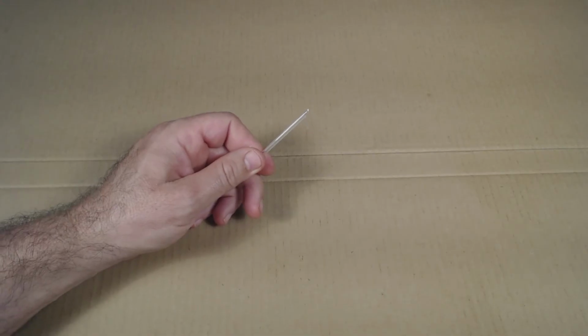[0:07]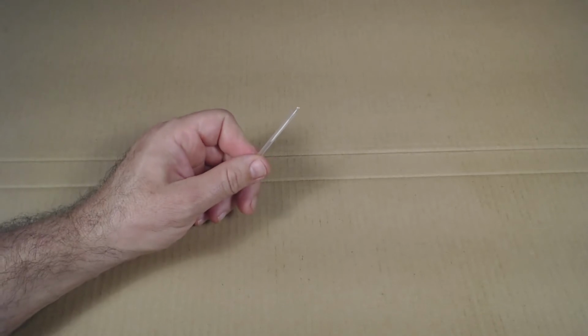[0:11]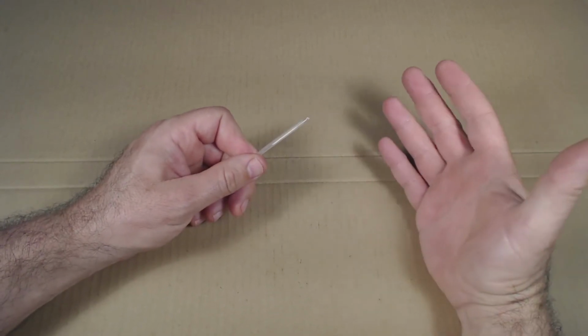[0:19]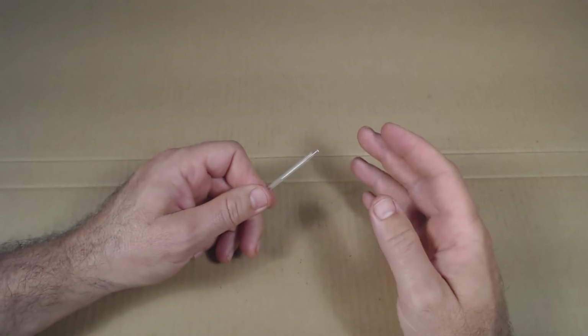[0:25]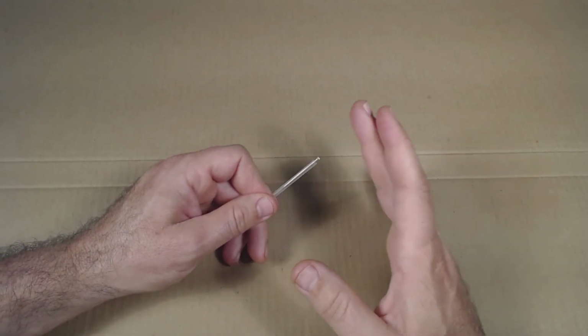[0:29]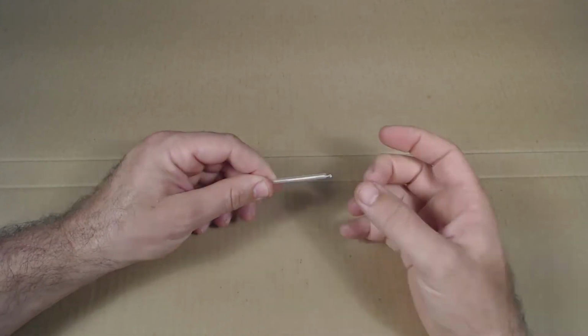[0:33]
So I thought I'd show you one of my crazy inventions I did when I was in school to help me practice needle insertion. There are three main techniques that I see practitioners use to insert the needle. One, they'll just kind of tap it in like this. I prefer to flick it in this way or this way.
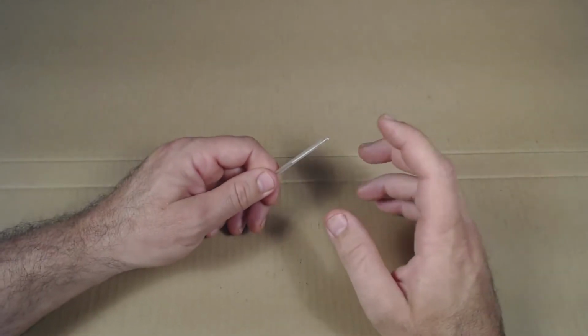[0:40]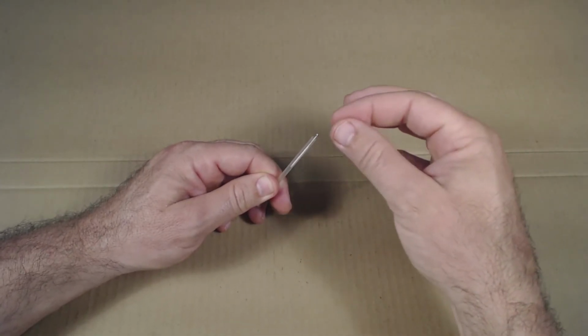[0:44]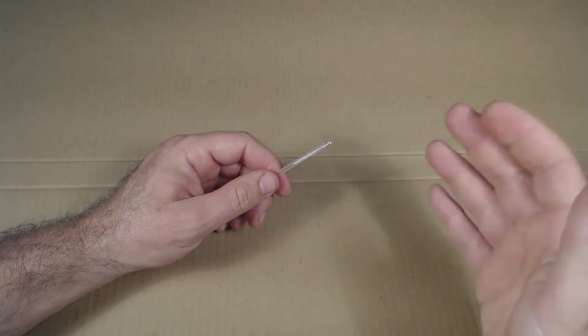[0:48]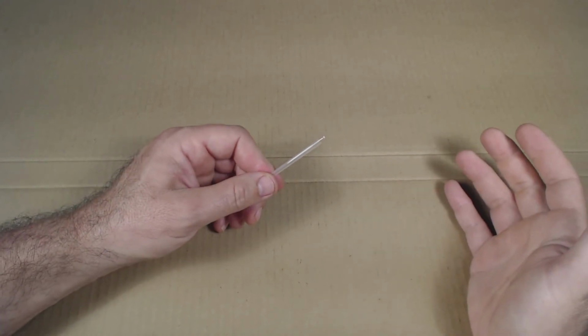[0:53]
So how can you practice that motion? You could practice it on the practice pad, but every time you flicked it in, you'd have to pull it out and put it back in the tube and do it again. So when I was in school, I wanted to find a way that I could just get a lot of repetitions in and not have to carry my practice pad around.
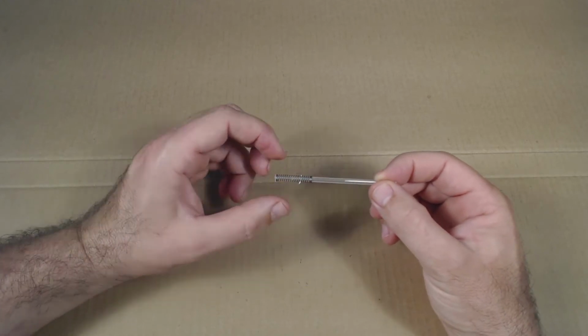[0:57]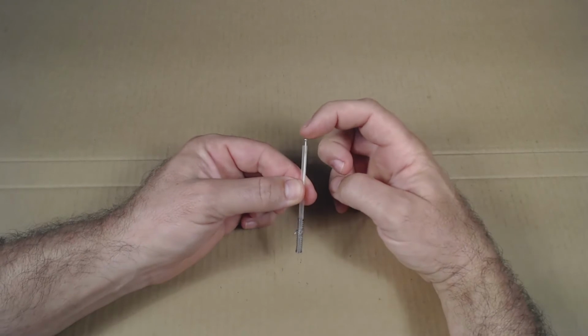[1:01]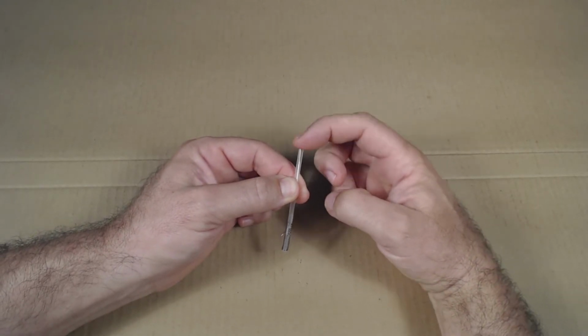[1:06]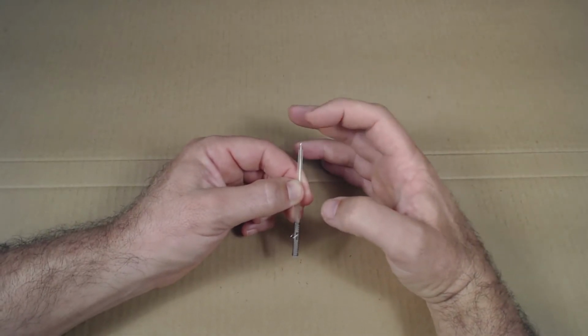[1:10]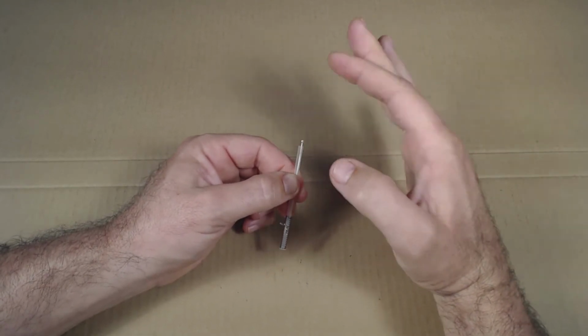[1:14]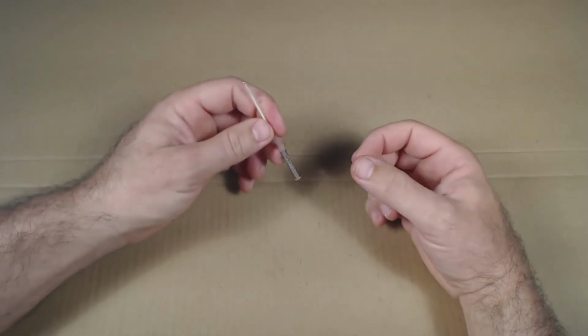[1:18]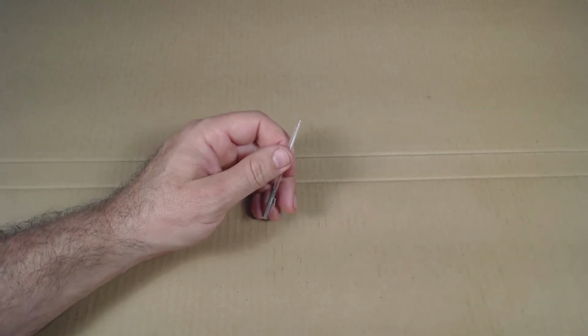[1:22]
So I made a little gizmo like this. It makes the needle spring-loaded, so it'll pop up every time after you hit it. It's pretty simple to make, and I'm going to show you how to make this tool in this video. And then you can practice to your heart's content. It's easy to carry around in your pocket, and you can practice multiple times during the day.
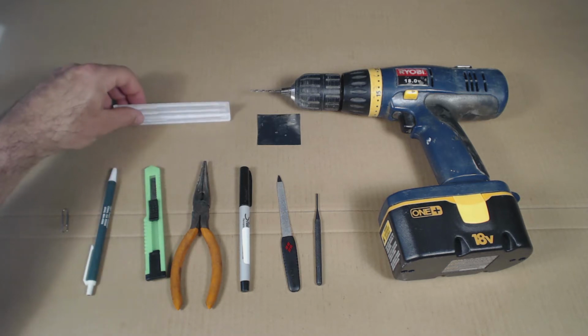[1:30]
So these are the items you'll need to make this project. First thing you need is some needles. The one that I'm making today is going to be out of a 2-inch needle. A 1.5-inch needle might work. A 2.5-inch needle might also work. The gauge of the needle is fairly important. I would use a 0.35 millimeter or 0.40 millimeter.
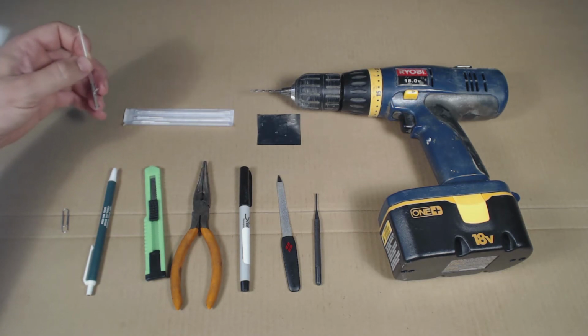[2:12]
That's Chinese 28 gauge or 26 gauge. Maybe you could use a 0.30 millimeter, which would be a Chinese 30 gauge needle. That might also work. It's just a thinner needle. I don't know how well it would stand up to the abuse of hitting it a bunch. But this one is a 0.35 millimeter by 50 millimeter. Next, you'll need a paper clip.
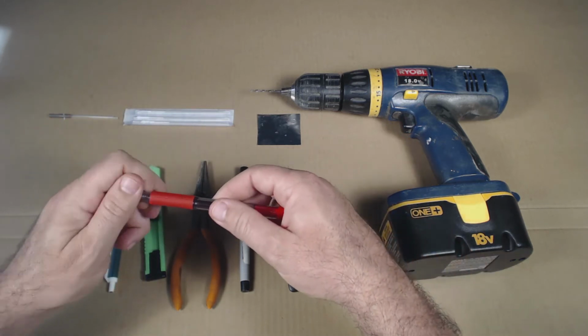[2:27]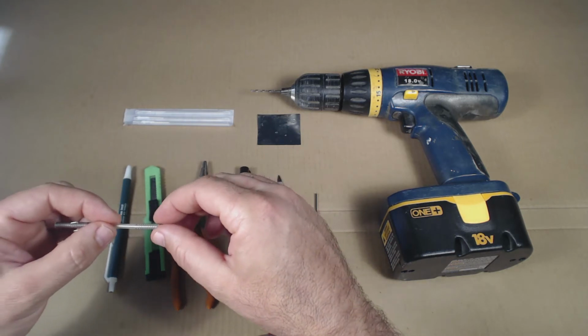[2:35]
You'll need a ballpoint pen, a retractable type of ballpoint pen. Pretty much any type of retractable ballpoint pen should work. You don't need the whole pen. What you need is to scavenge the spring out of it. These springs seem to be pretty universally sized, and they will almost all fit just perfect over a guide tube like that. So you just need to scavenge that spring out.
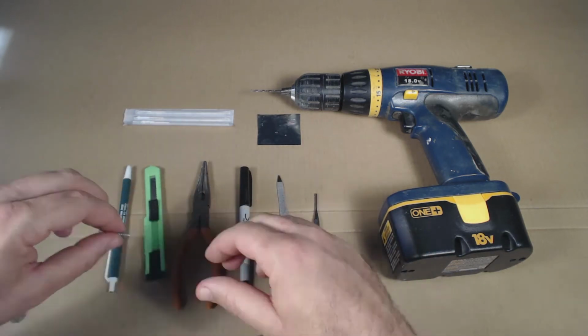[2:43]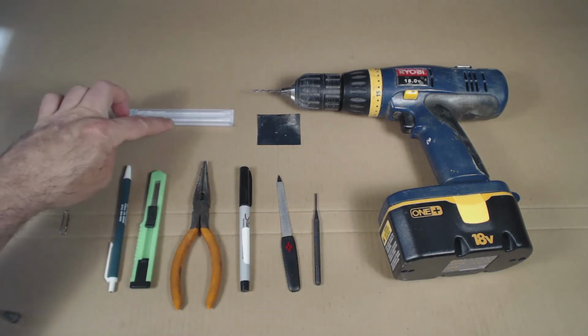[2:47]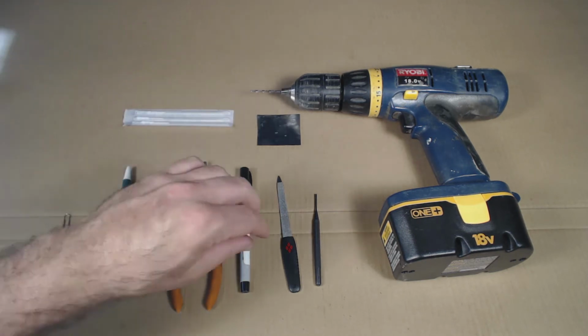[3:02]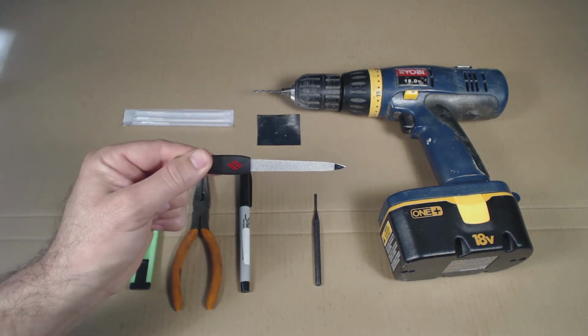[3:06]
Next, you need something to cut the tube with. So you need a utility knife or a razor blade or an X-Acto knife. You need some needle nose pliers. You need a marking pen. This you won't take apart. You'll just be using it to mark where the slots are in the tube. And you need a metal nail file.
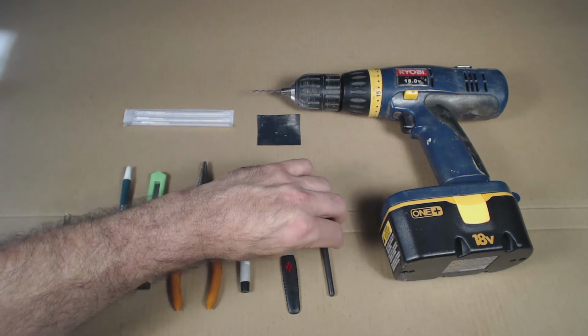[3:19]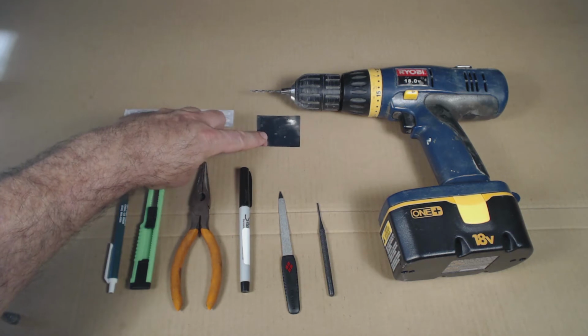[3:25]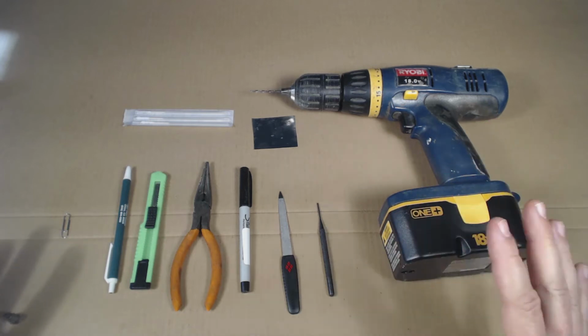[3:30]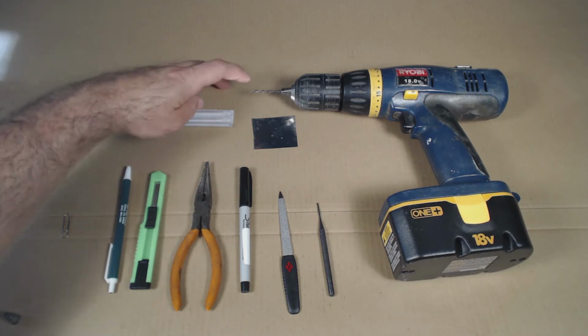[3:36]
And it can help if you have a punch. This is a 1/16th of an inch punch. It makes it a little bit easier to bend the needle. You may be able to bend the needle on the paper clip though, so I'll try to illustrate both methods later in the video. You need a little piece of aluminum foil. You also need a skillet and a stove. And you may need a drill. Many of the ones I've made in the past, I do not need a drill, but you may. If you need a drill, the ones that work on the guide tubes that I'm using is a 3/32 inch drill. So you may need a drill with a 3/32 inch bit.
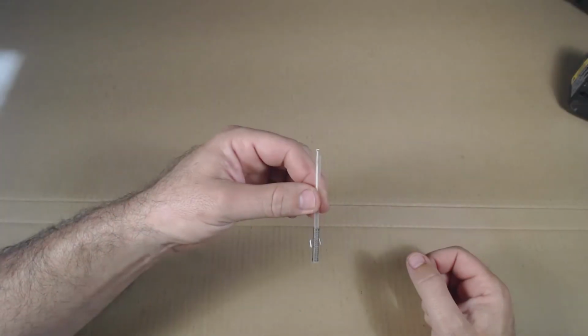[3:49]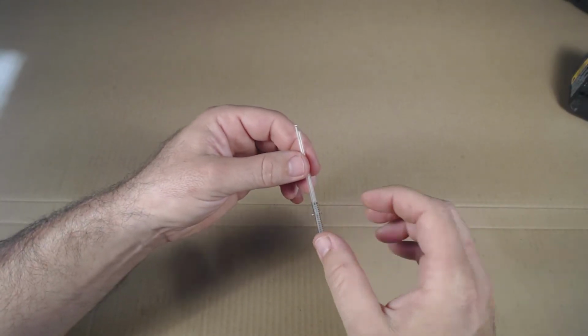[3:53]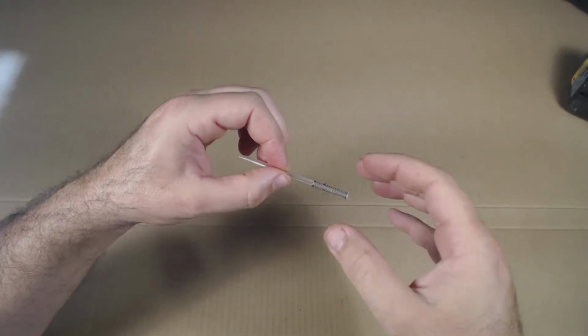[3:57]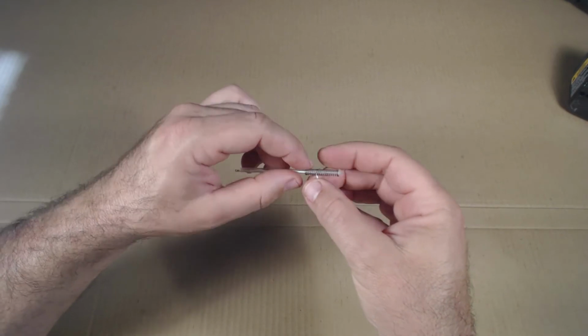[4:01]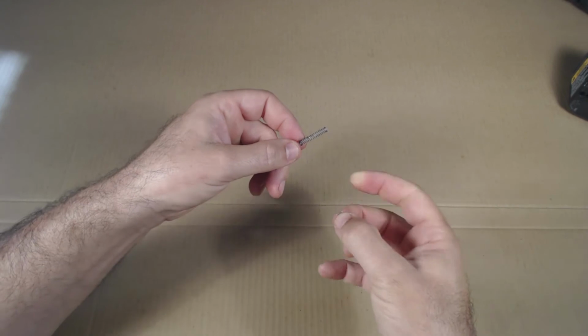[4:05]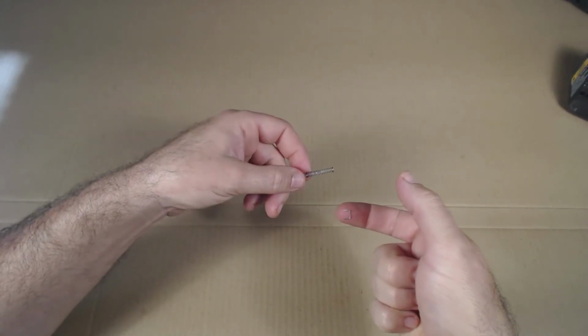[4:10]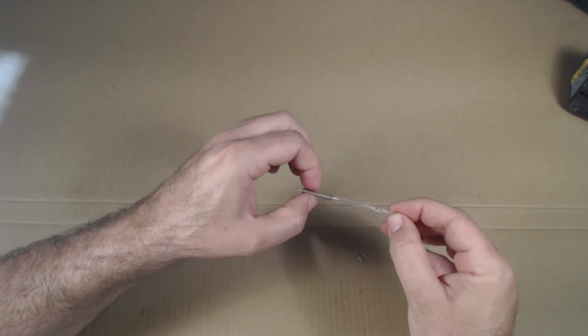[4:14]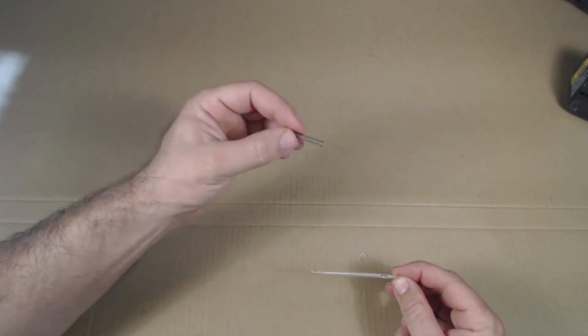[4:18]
Here's an overview of the gizmo, and I want to take a minute to look at each individual part. It might help you understand when we get into the construction steps later. There's a little piece of paper clip here. It's just bent in a U shape. It is to keep everything held together. There's the retractable ballpoint pen spring that will be unmodified.
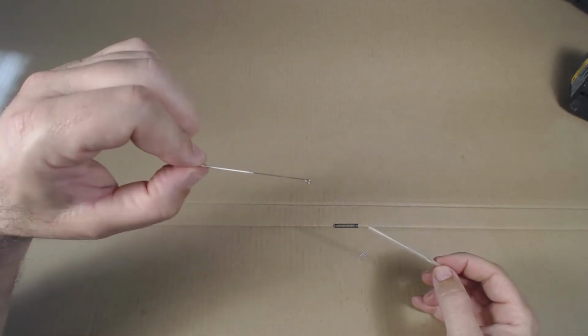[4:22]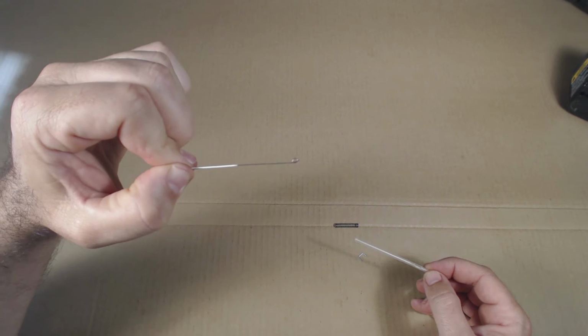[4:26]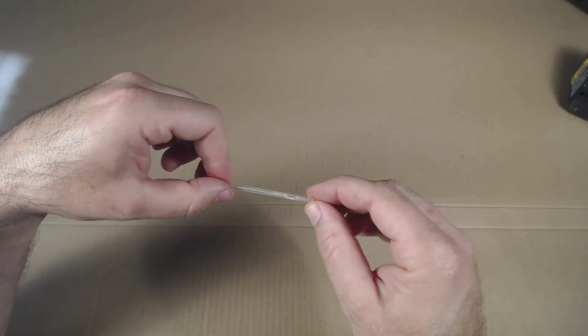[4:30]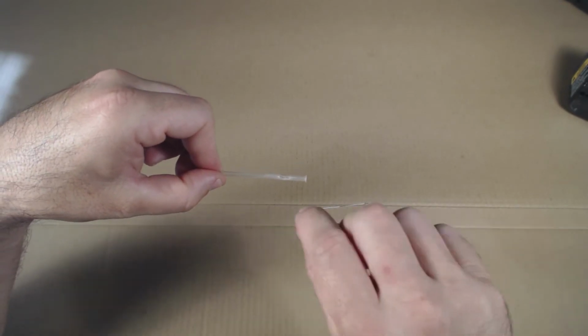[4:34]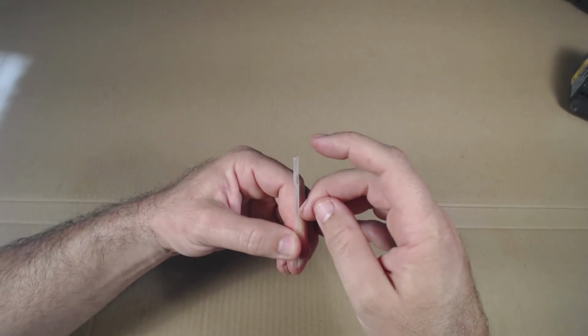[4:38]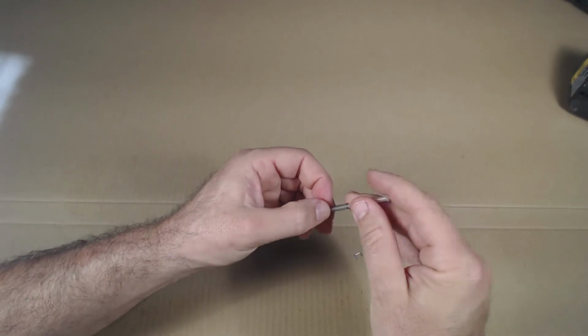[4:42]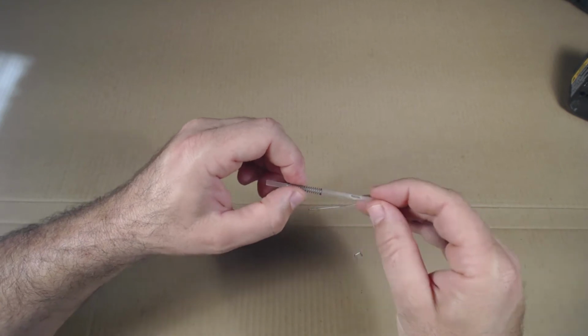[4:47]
The needle, we're going to have to bend a loop in it. I'll detail that in a minute. And the tube needs to be modified. We need to make a slot in it big enough for the piece of paper clip to ride in there. And then we need to melt the end of it just a little bit to retain the spring on there. So we'll detail all these steps next. First, I'll go over the tube.
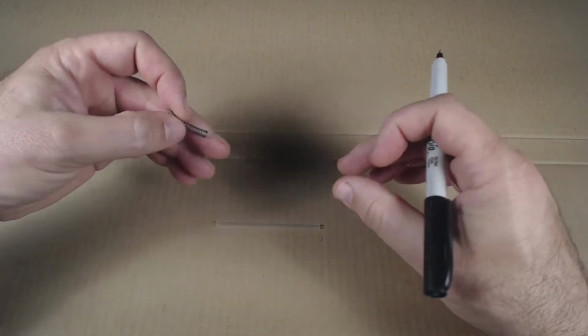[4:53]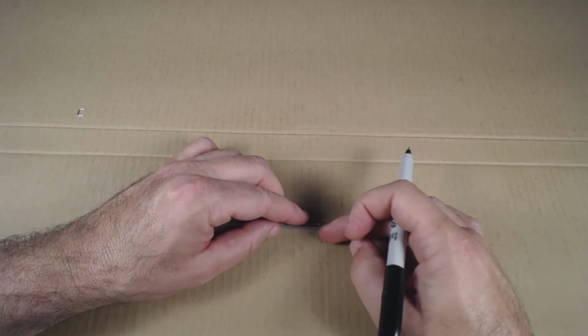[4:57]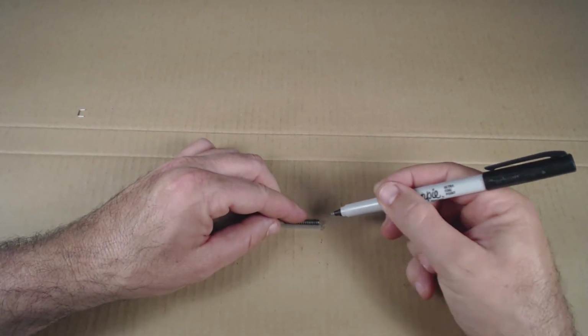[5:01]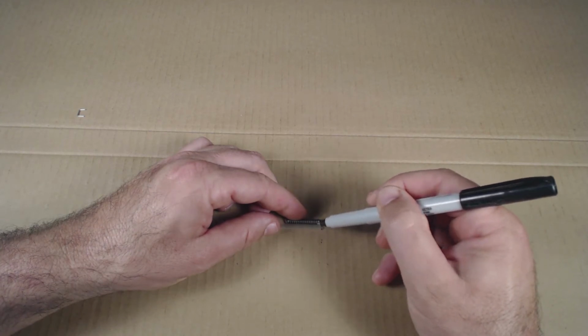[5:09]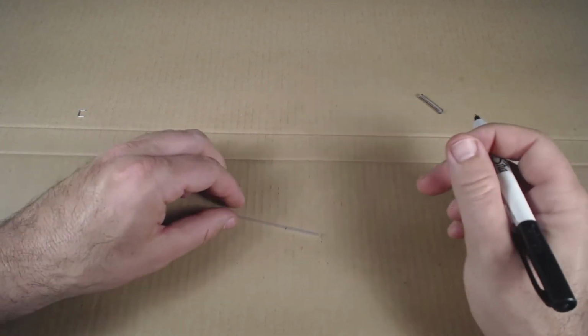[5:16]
So here I have my tube. I'm going to put my spring next to my tube, and I'm going to leave a little gap on this right side because I'm going to melt that. I'm trying to get the spring into its final assembly position, or roughly in that final assembly position. And I'm just going to mark where the top of the spring is going to come on the tube.
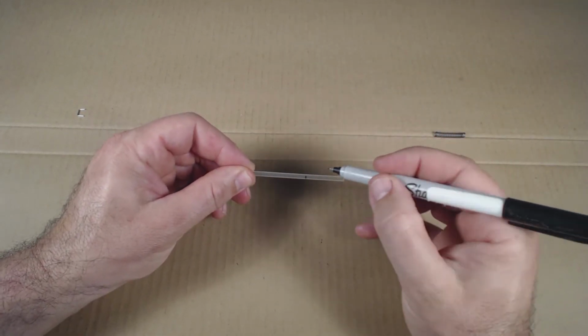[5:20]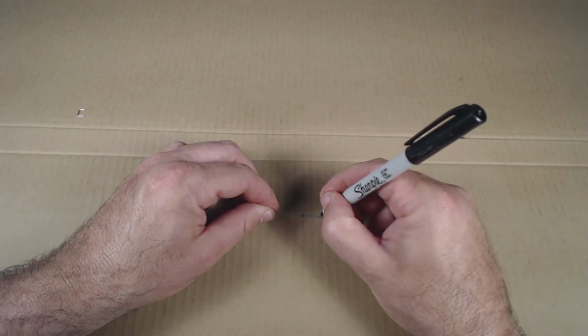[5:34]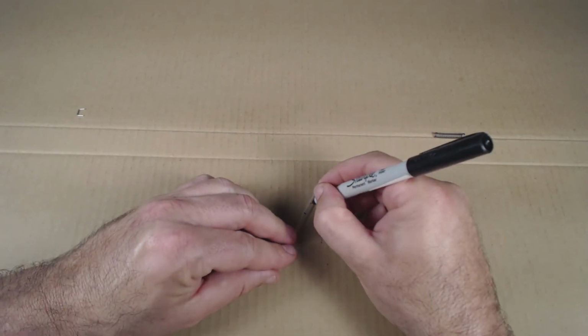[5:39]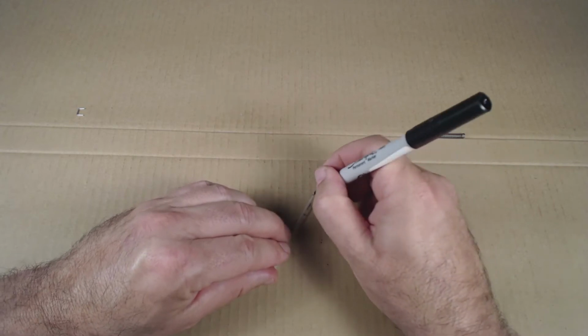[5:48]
So I've marked the tube now, and I need to position the slot. About halfway, I would say, the midline of that distance between the end of the tube and your mark, start about halfway and then just go up from there. I'm just going to make a line so I can cut it with the utility knife, and I'm going to do the mark on the other side as well.
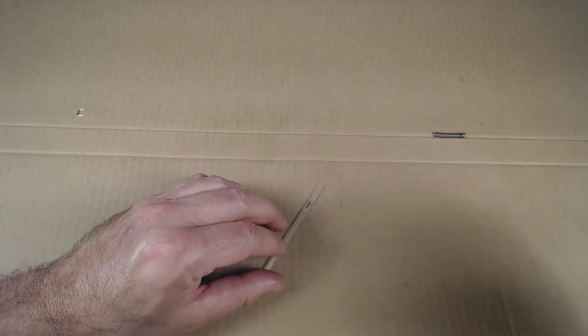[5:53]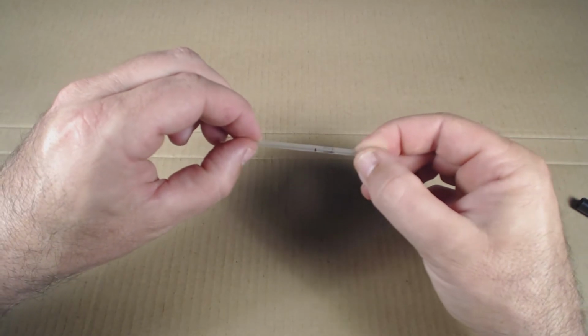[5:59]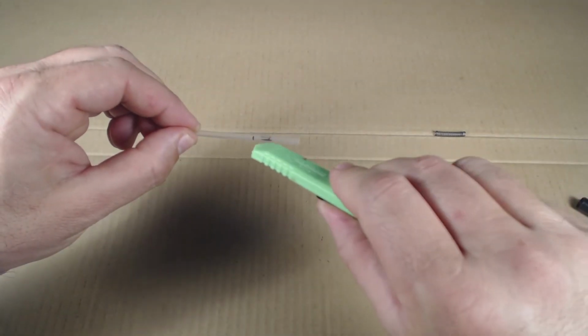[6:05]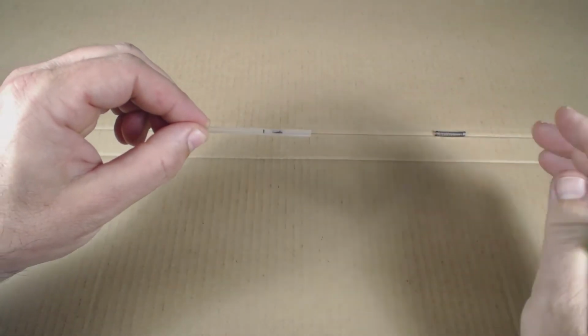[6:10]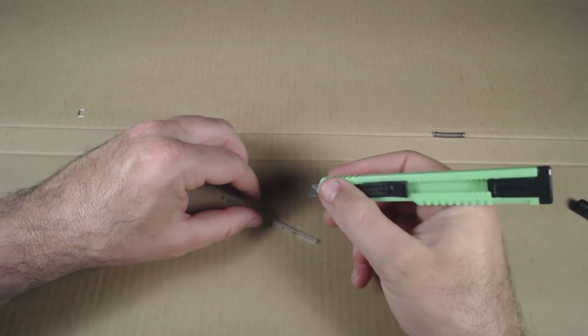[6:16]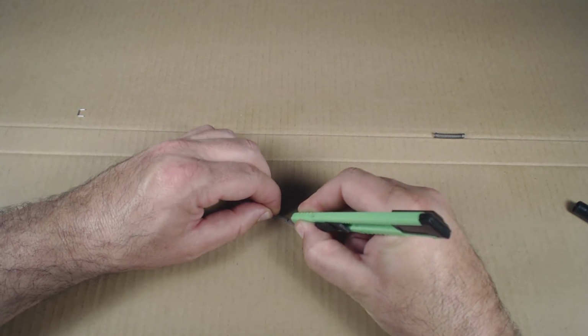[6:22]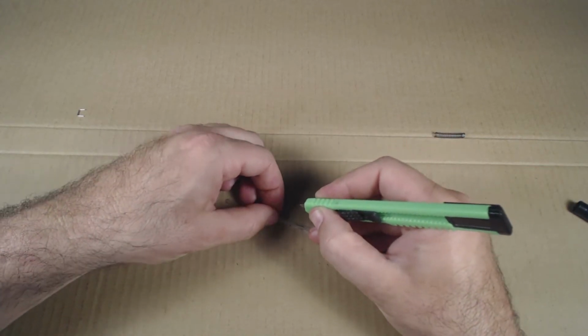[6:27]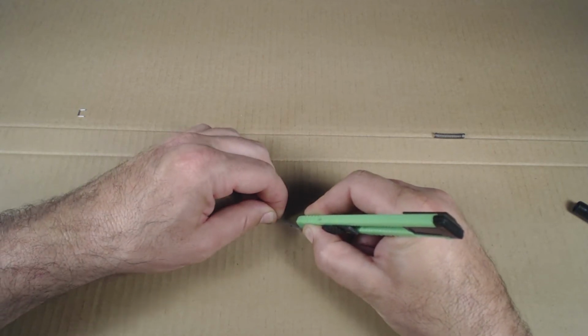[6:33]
So I've got the two slots roughly marked, and there'll be some leeway here, so don't fret too much about it, but do your best to try to get the slots in the middle of the tube. If they're too far to one edge or the other, then you're going to have trouble. So then I've got my utility knife, and I'm just going to make a slit here, and the goal is to keep the slit in the middle of the tube and make it about as wide as the nail file that I'm going to use.
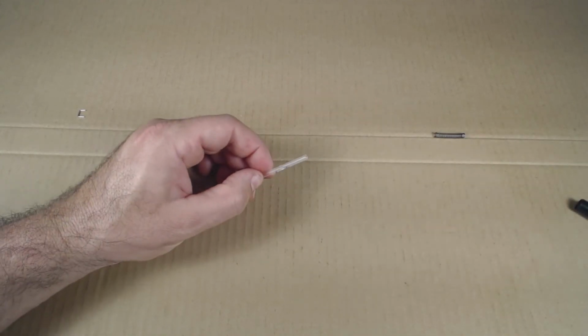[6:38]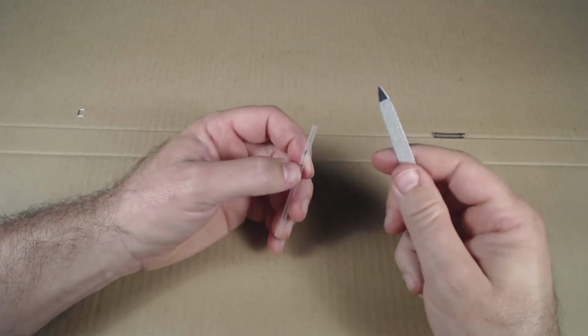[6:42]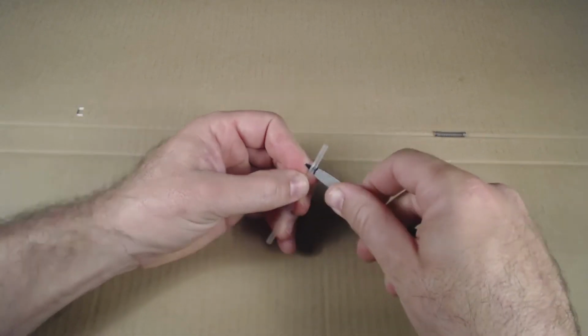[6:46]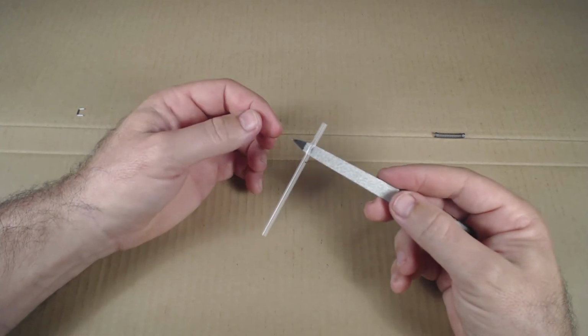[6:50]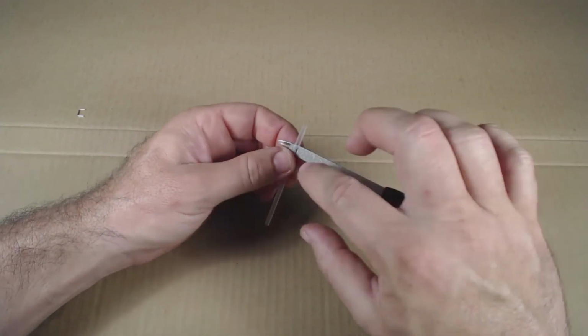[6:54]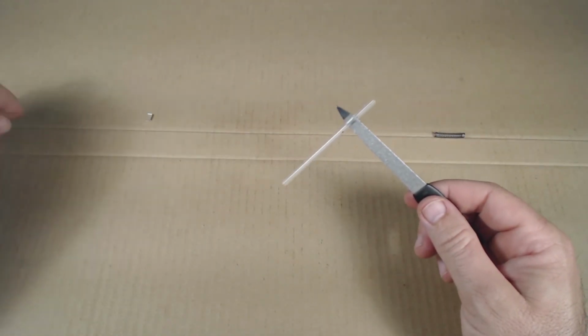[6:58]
Okay, so roughly I've got that marked, and now I'm going to insert my nail file into that slot so it is wide enough for me to get the nail file started. Now I'm going to file the slots until they're wide enough that they can accept the paperclip retainer.
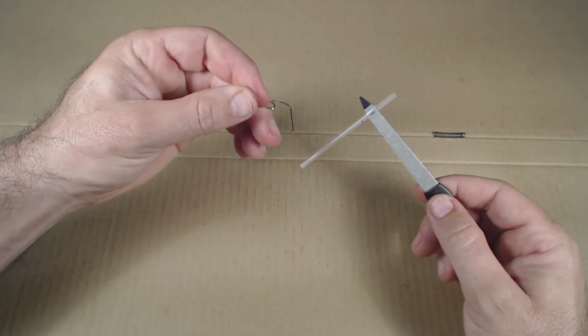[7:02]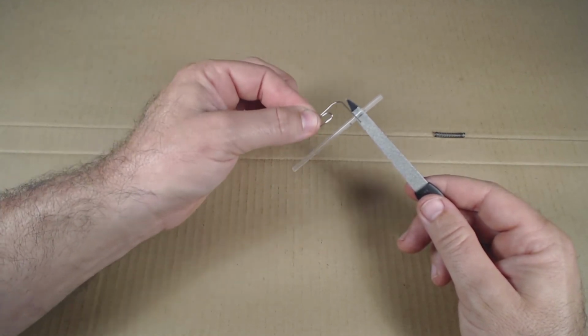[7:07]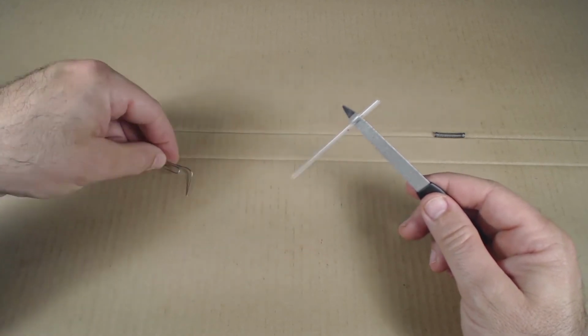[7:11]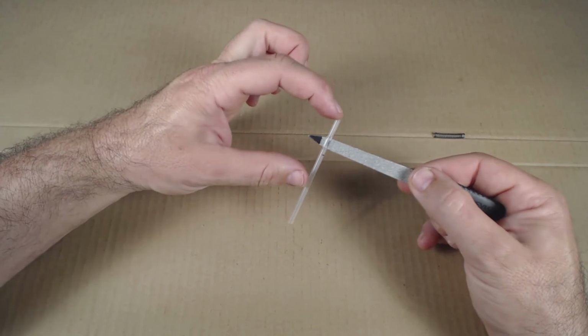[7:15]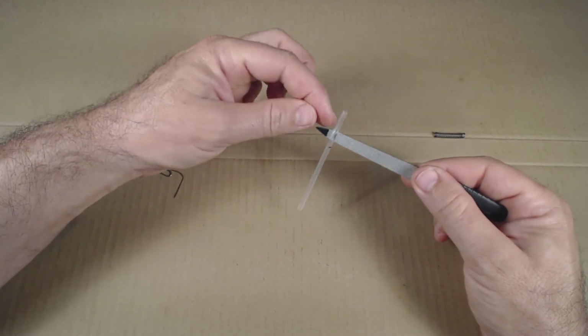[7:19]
So you can measure it as you're filing, then you take the file out and you can measure if the slot is wide enough for a paperclip. So when you're filing this, don't push up here. Don't push like that to file. You've got to grasp this, or you're going to bend and kink the tube, and that won't be good.
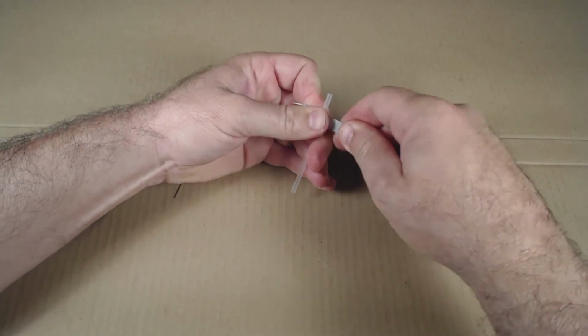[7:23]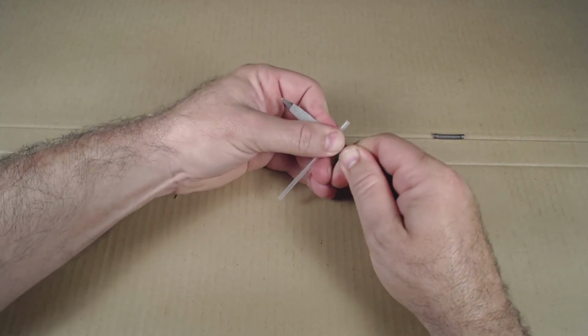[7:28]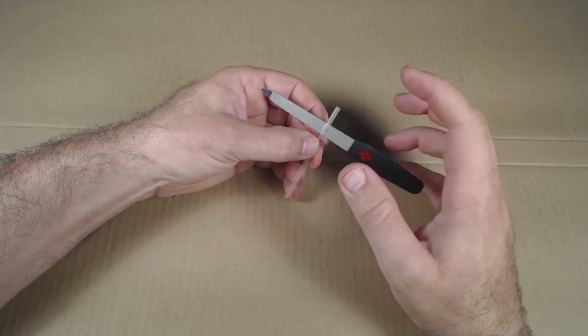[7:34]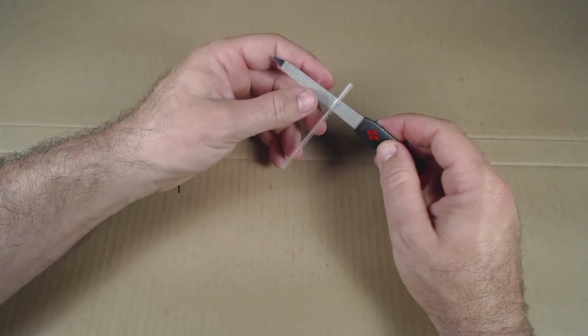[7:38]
So I'm going to get it started here, and then I'm just going to work it back and forth like that, and it'll take you a minute, but you'll get that file down big enough to accept the paperclip. So I'll be back in a second to show you when I'm done with that.
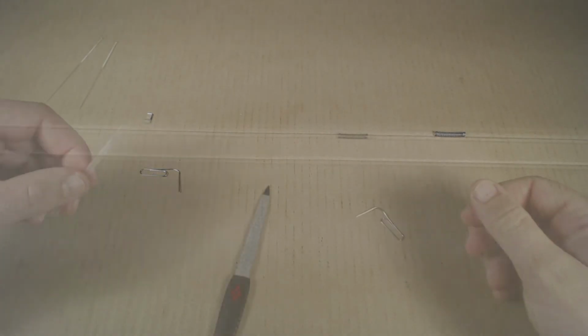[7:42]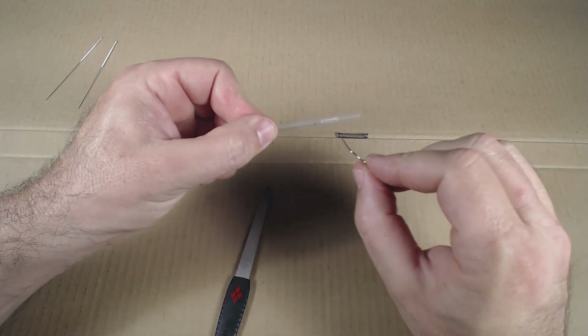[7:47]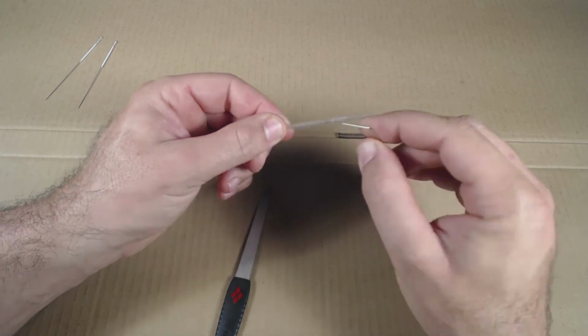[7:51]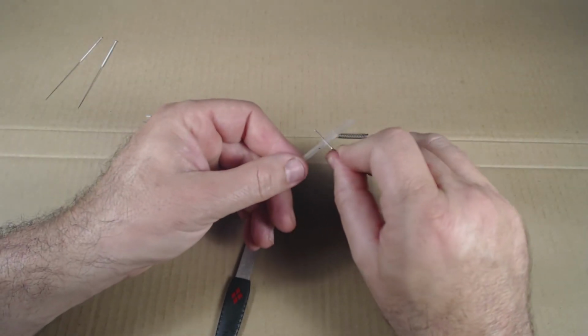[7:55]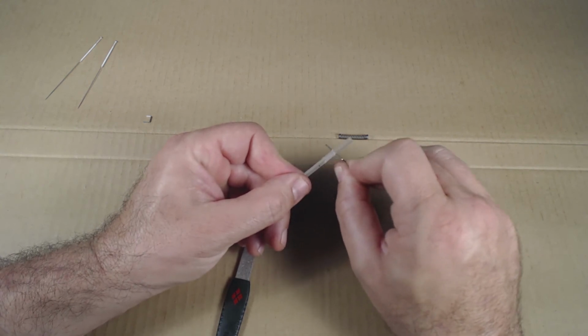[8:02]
So I've got the tube filed, and I can test whether that slot's big enough by getting the paperclip in there. And does the paperclip move freely? I want it to move freely. That's my goal. And I'm about there on this one.
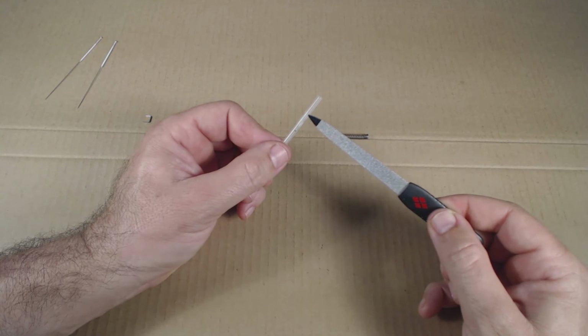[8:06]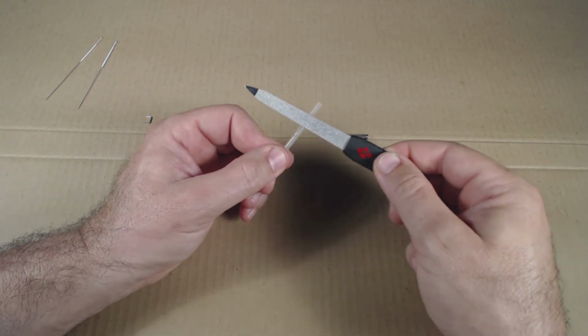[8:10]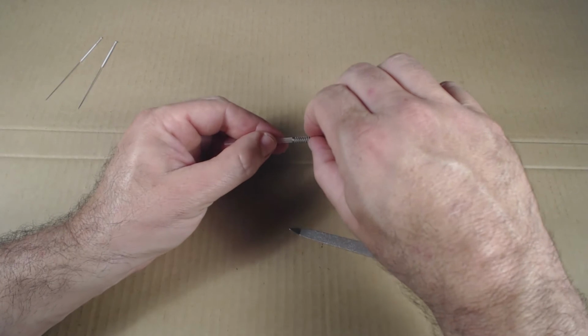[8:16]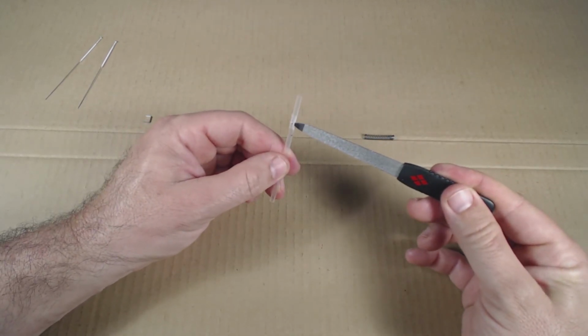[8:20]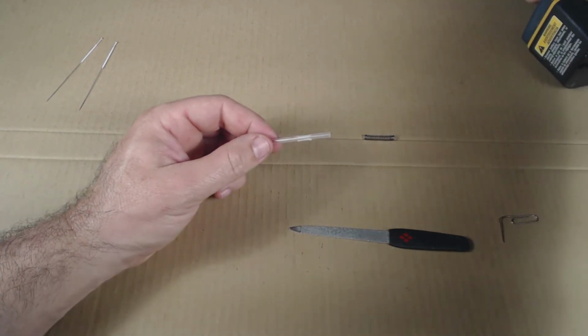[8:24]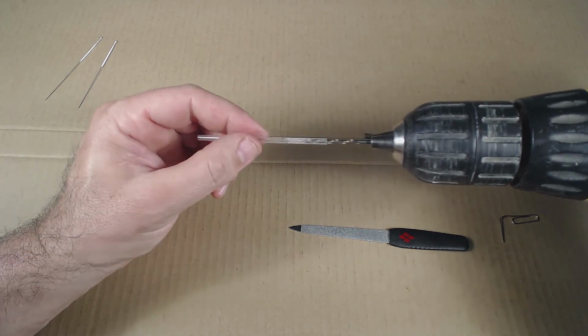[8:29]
Now, sometimes as you're filing, some material may build up on the outside edge of the tube, and then you can file the outside edge of the tube to get that excess material down. If you don't do that, the spring would catch on the outside. Sometimes material builds up on the inside of the tube. That's where you would need the drill to get rid of the material on the inside.
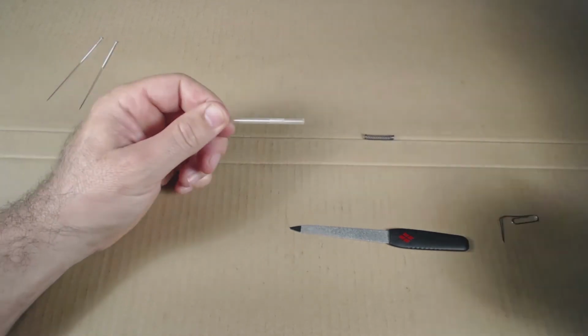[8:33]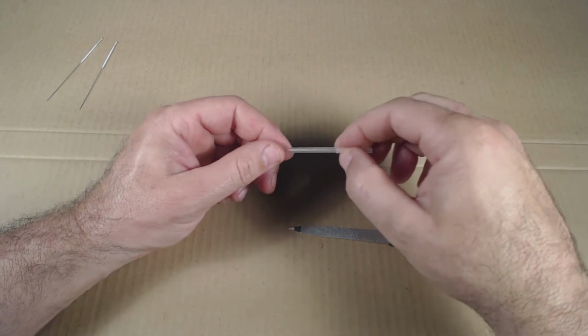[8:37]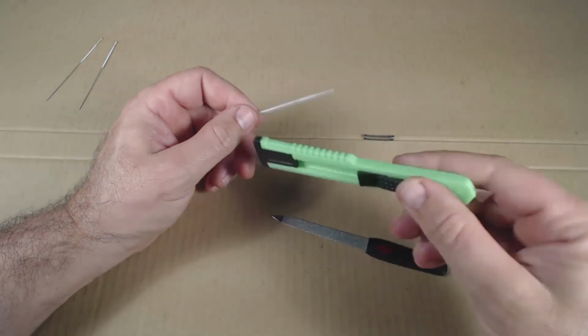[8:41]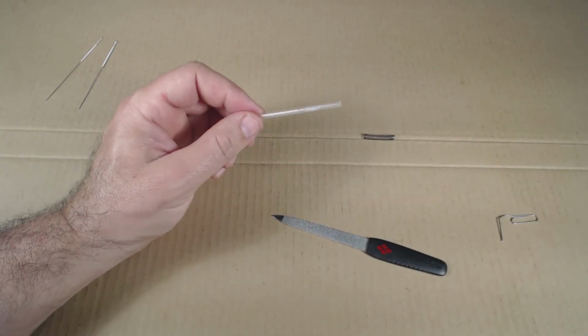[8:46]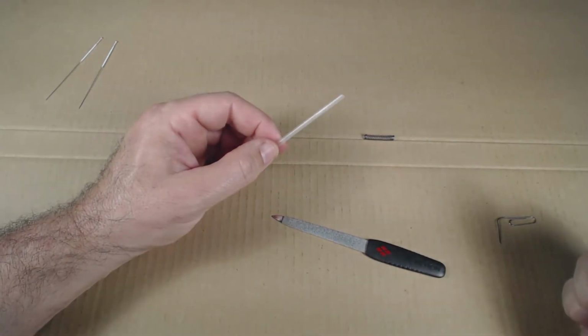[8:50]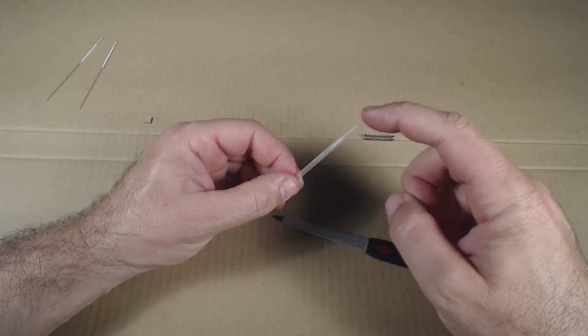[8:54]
But a lot of times that drill's just not necessary. But if you do get material inside, use a drill. The outside, use the file, or you can shave off that excess material with your utility knife. Anyways, you need to get two slots that the paperclip can fit through, and then that step's done. And then we'll need to melt this tip. I'll show that next.
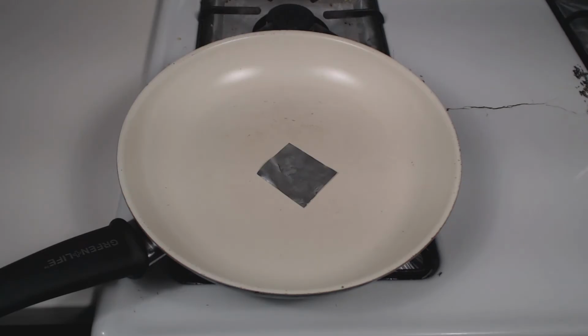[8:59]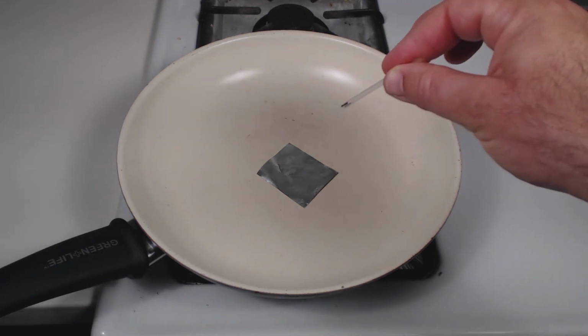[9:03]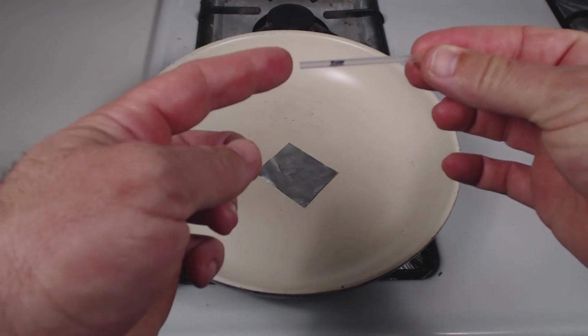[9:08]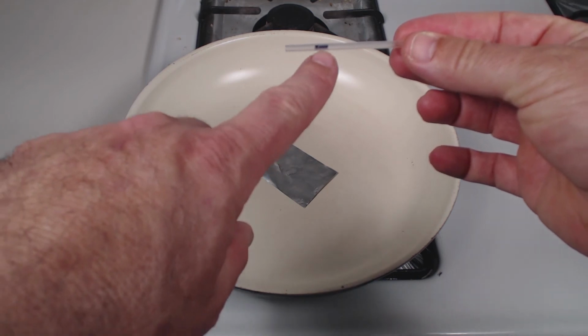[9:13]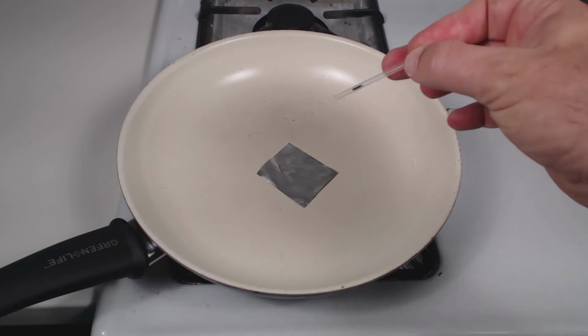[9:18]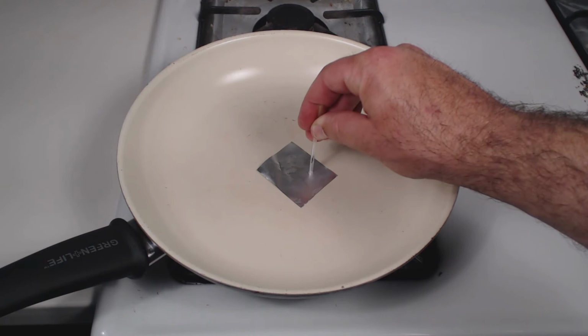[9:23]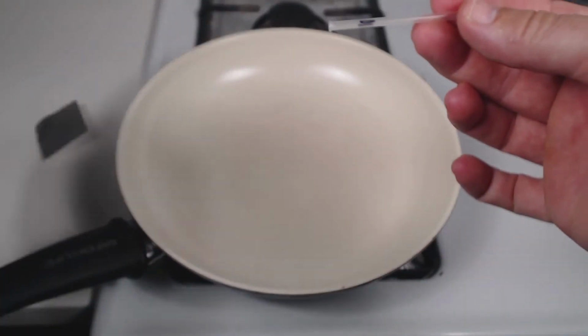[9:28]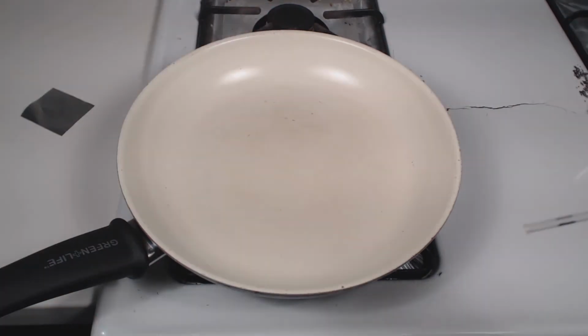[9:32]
I've got my pan warmed up. I put the aluminum foil on the pan so I don't get plastic on the pan itself. Here's my tube. Just to make it clear, I marked on this tube where the slots would be. I need to melt this end just a hair, and it only takes a second if your pan's warm. Just touch that aluminum foil, and then you'll get a little lip. You'll get a little lip on that plastic, and that'll be enough to retain that spring.
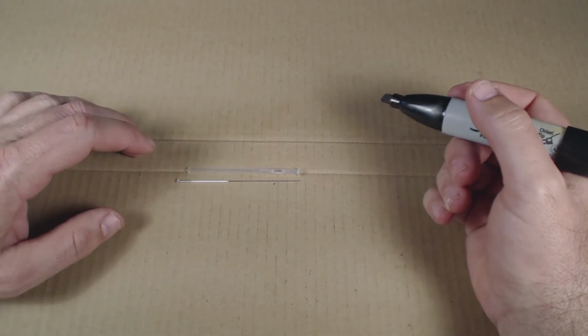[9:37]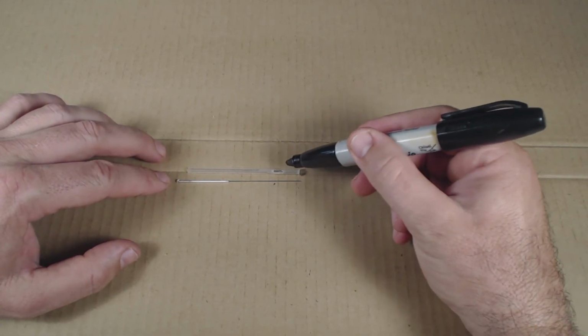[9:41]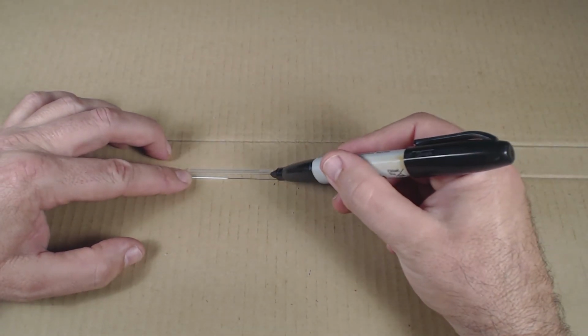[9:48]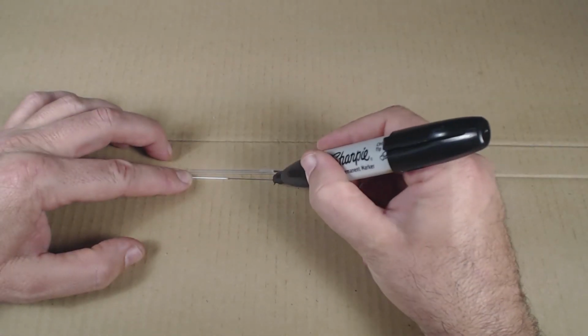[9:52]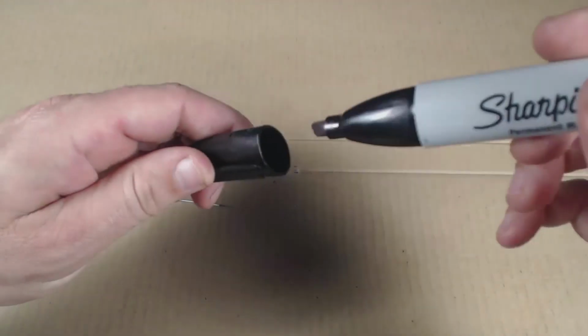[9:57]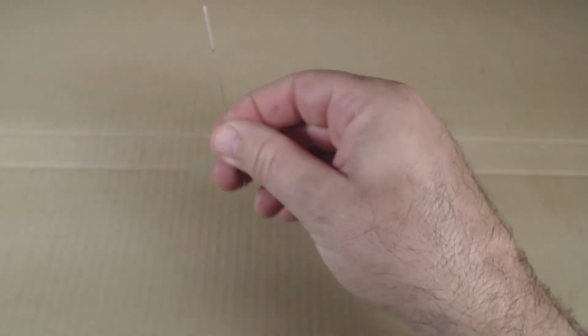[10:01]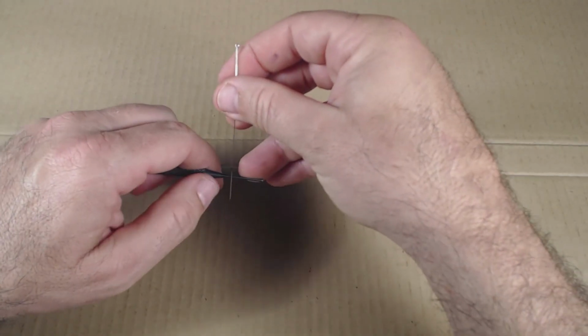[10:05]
Okay, now we need to prep the needle. So I want to position the needle next to the tube with a little bit of it sticking out on the left side, and I want to mark where the tube comes at the top of the needle. So I want the loop to end up below that mark on the needle. I don't know if you'll be able to see that mark, but it's there.
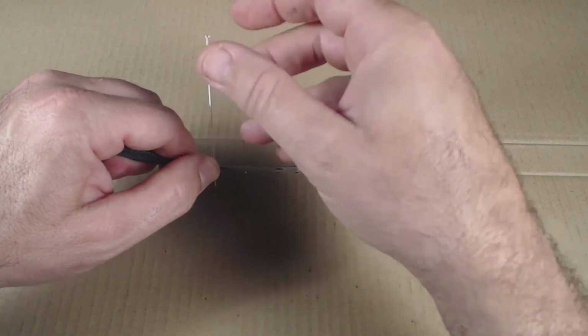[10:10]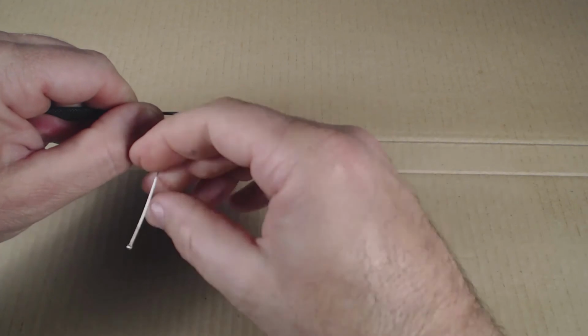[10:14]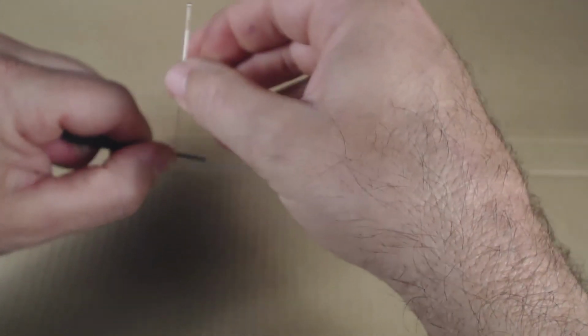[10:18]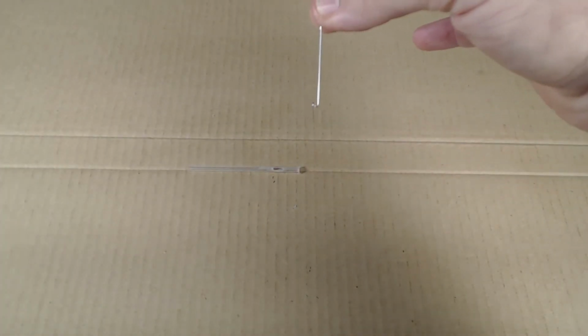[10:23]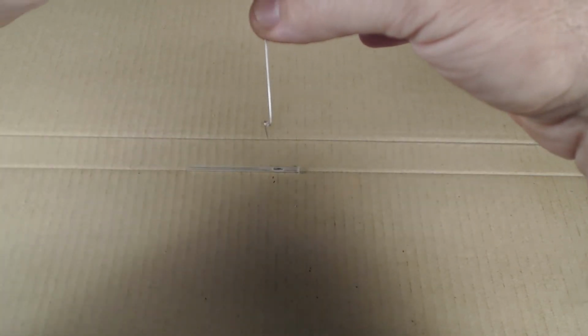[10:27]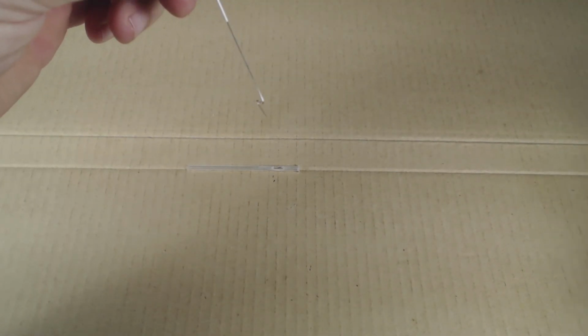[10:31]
So I'm going to take my punch and hold the needle with the mark above the punch. I'm going to hold the needle in position. Then I'm just going to bend the needle around the punch and try to get just a little more than a complete revolution in it. Now here, hopefully you can see the needle, that loop is kind of spread out. It would not be able to fit in the tube like that.
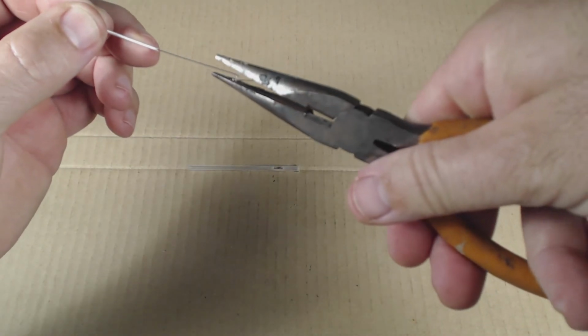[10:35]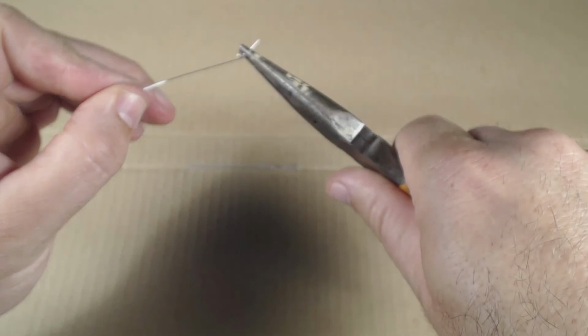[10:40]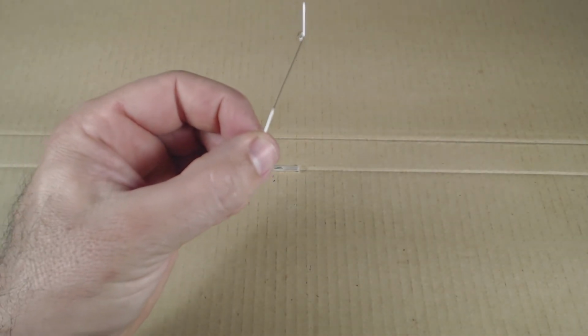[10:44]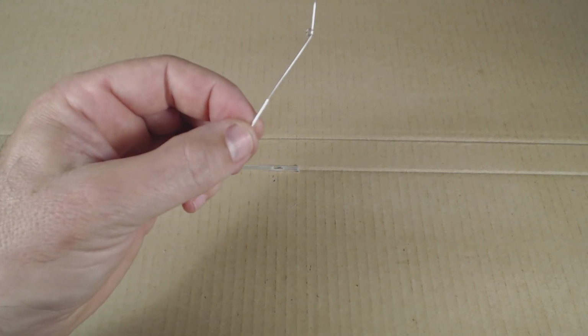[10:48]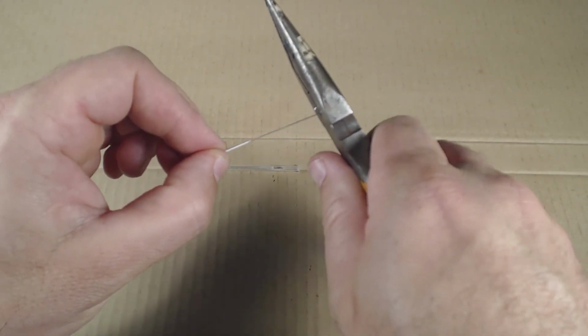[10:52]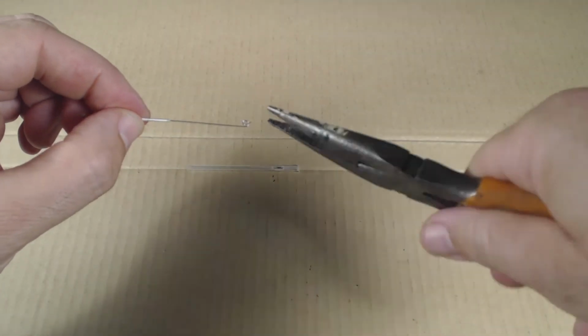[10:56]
So I need to compress it down with the pliers. So once I compress it like that, then the loop will be able to fit in to the tube. And then we can clip off this end here. And if the loop won't fit in, we can compress it this way to make sure that it fits in the tube.
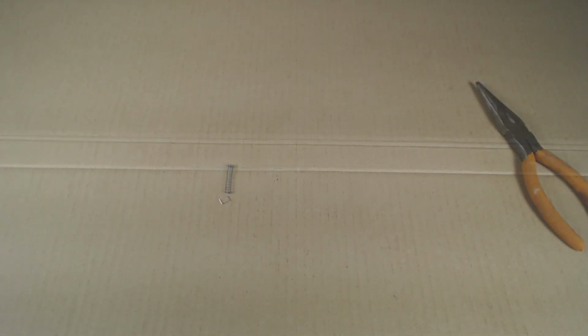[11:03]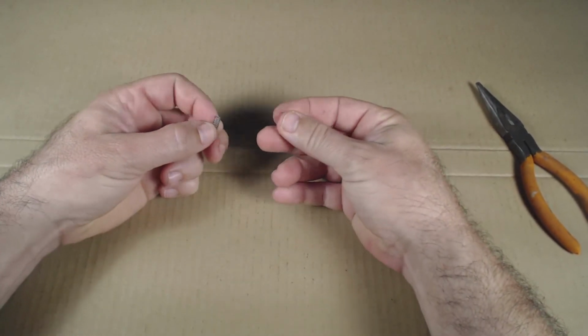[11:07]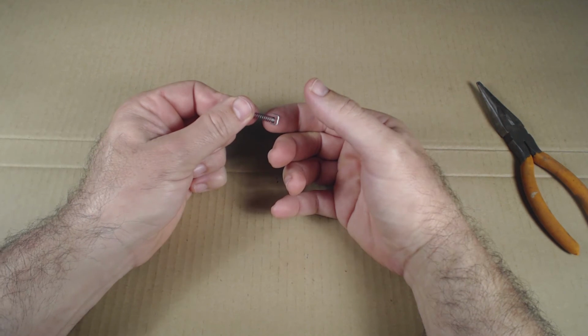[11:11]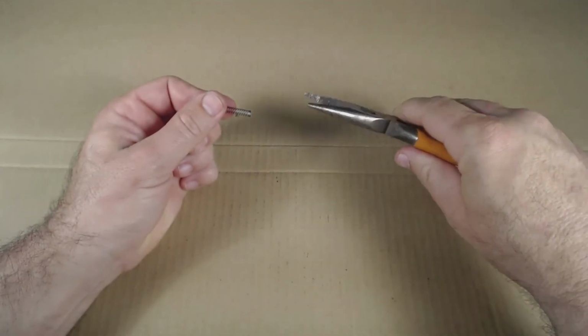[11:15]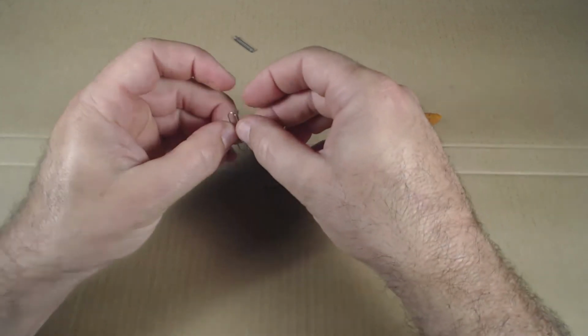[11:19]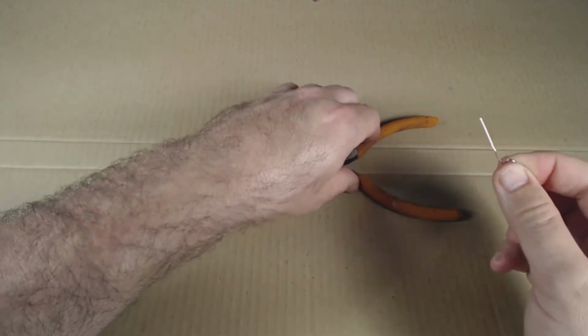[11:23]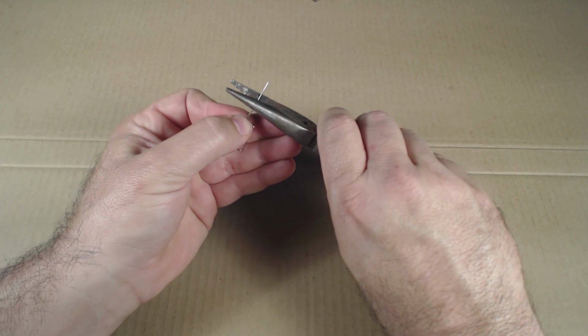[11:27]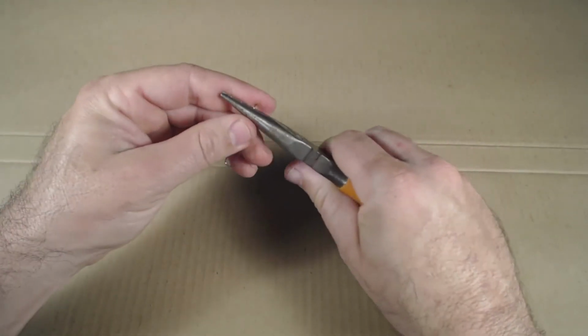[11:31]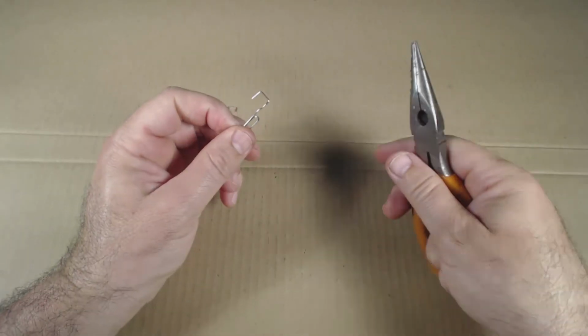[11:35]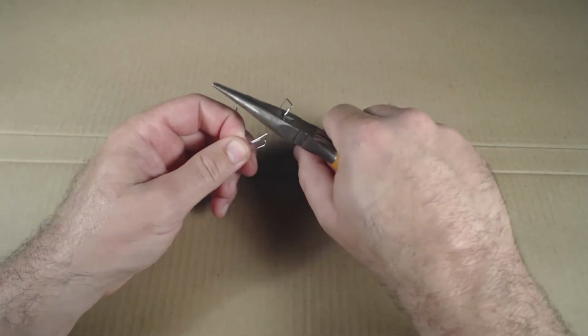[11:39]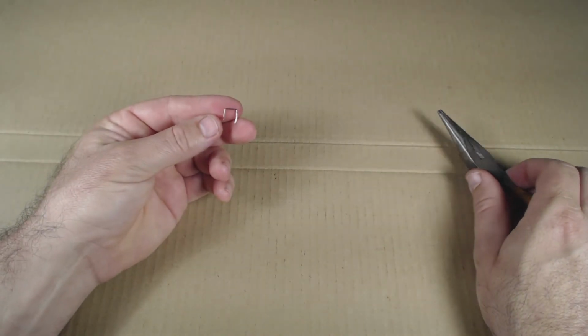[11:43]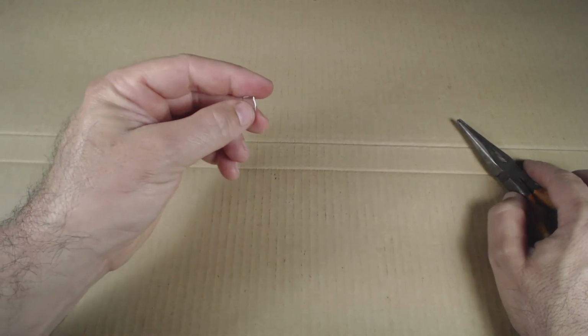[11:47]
Now we need to make our paperclip retainer. It needs to be a little wider than the spring is. So you want to pick the appropriate width on the pliers. If we pick that appropriate width, I'm going to guess there, hold it in place, and then we can bend both sides to get that U shape. And I can just clip off the excess there, and roughly we have our U-shaped piece. You can straighten it and clip it however you want to get it the final shape.
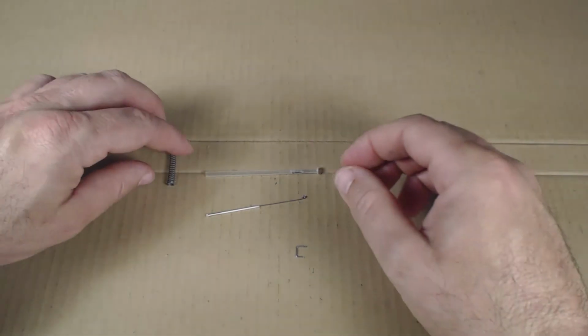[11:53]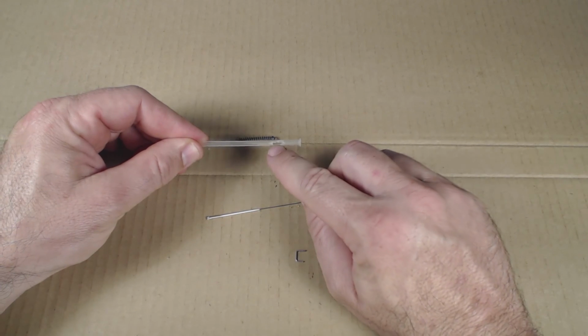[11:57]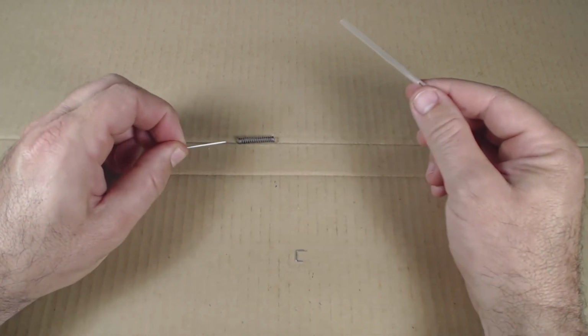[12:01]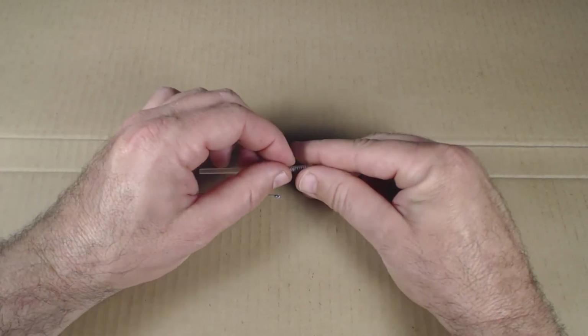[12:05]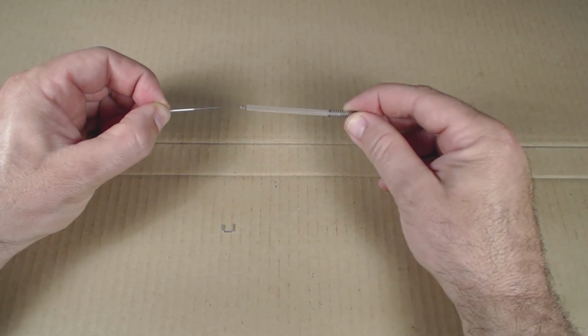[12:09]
Okay, it's assembly time. We have our four parts. We have the spring. We have our tube that's prepped with the slot and is melted, our needle with the loop in it, and our paperclip retainer. So I'm going to put the spring in place there. I'm going to put the needle loop so it's facing me. I'm going to line that up with a slot.
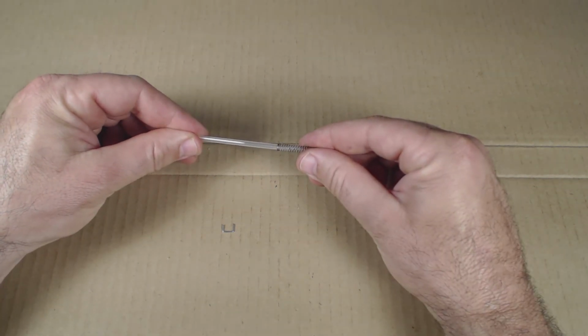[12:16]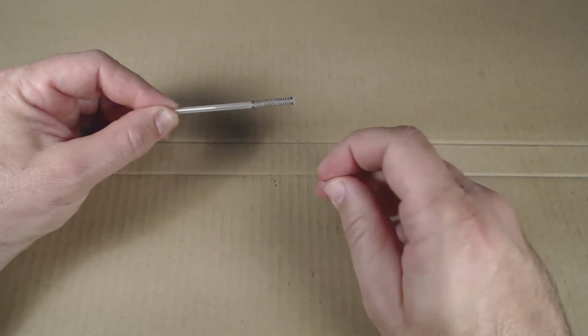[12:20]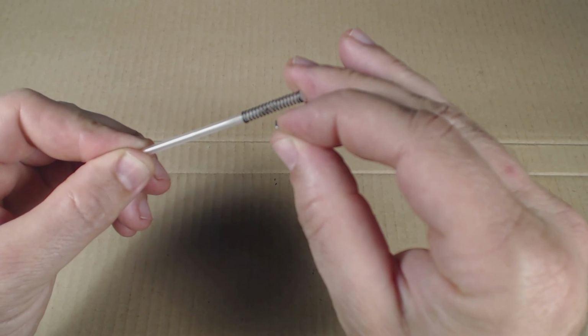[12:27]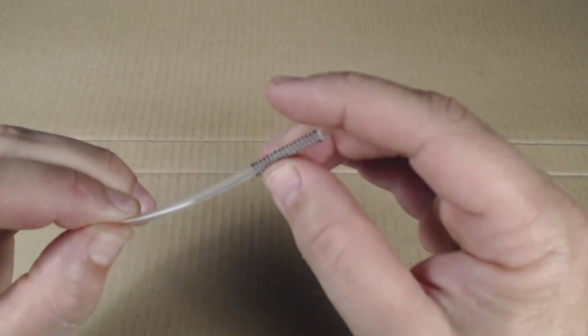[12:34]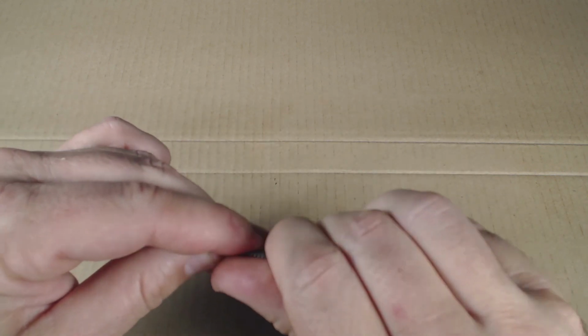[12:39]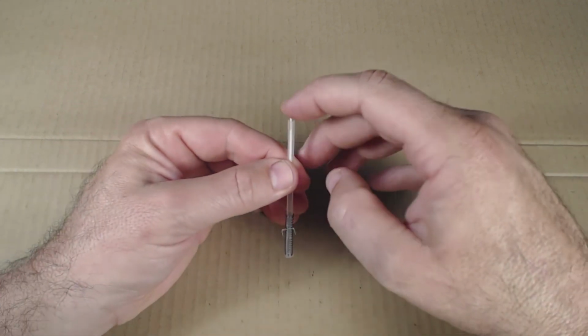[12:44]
And some of this is just too small for me to get zoomed in on. But anyways, we need to line up the slot with the loop in the needle. And then I need to get that paperclip through the loop on the needle for that final assembly. And again, I wish I could show it clearer, but you'll be able to figure it out. So I think I've got everything in position, and now we've got that spring action there, so our assembly's complete.